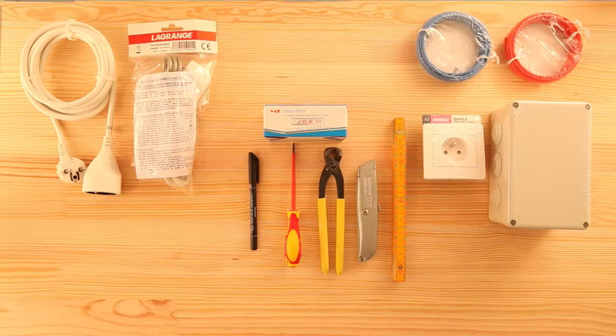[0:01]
Okay, today I'm building a tempering bath system to accommodate various container sizes. I will mainly follow instructions mentioned by Nicholas on his blog post about a thermostated water bath. The link to his post appears at the bottom of the screen. You can copy it for reference. So thank you, Nicholas. Today I'm just going to show how to set it up.
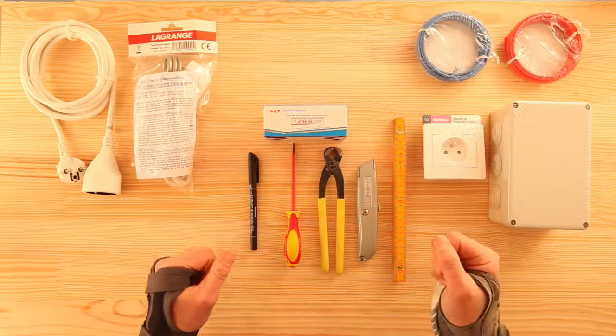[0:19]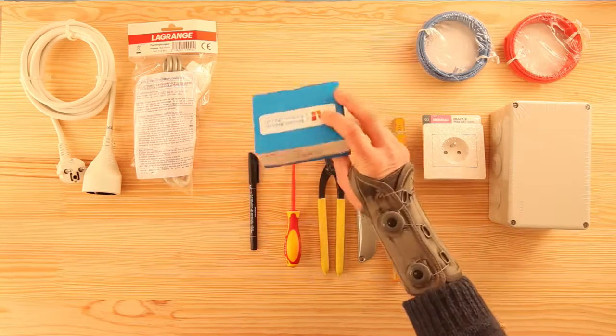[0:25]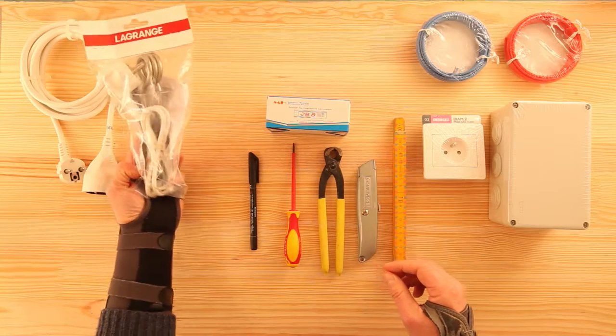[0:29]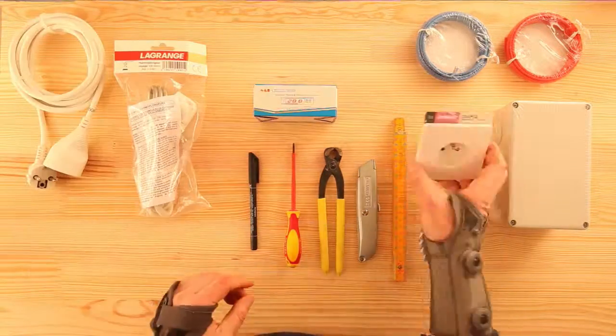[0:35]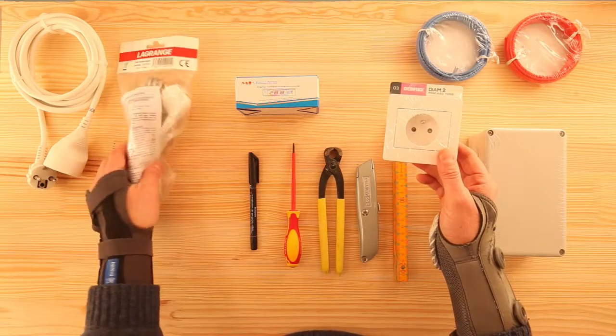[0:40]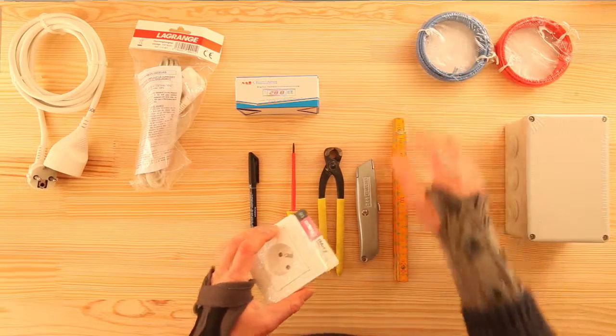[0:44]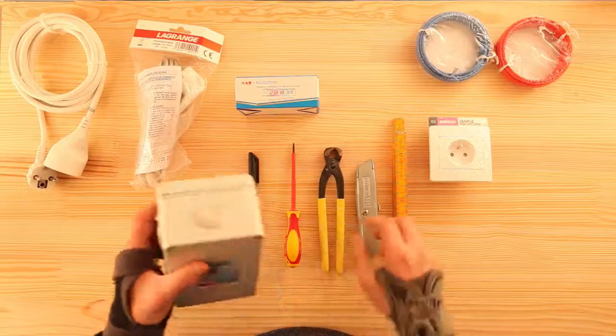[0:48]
We'll need a temperature controller. It's easy to find one. Several online dealers are referencing a few of those. We'll also need a 300-watt beverage heater or immersion heater. It's just a big heating resistance, like the ones found in electric kettles most of the time. Then we need a wall power socket to plug the immersion heater in, and obviously some copper core electric cable. Finally, a box to install everything in.
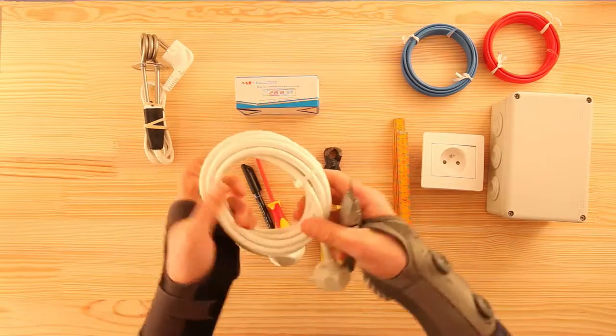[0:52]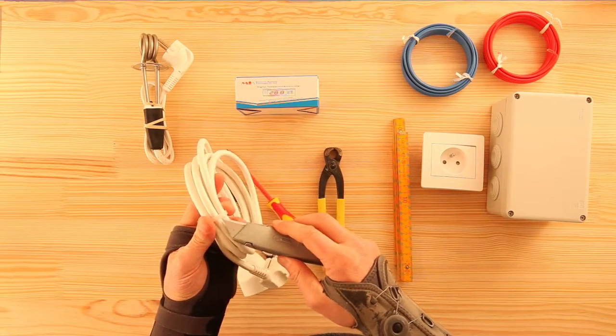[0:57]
Here, I will sacrifice a heavy-duty extension cord to make the power supply for this whole thing. As stupid as it may sound, it is cheaper than making one from scratch. At least in my area.
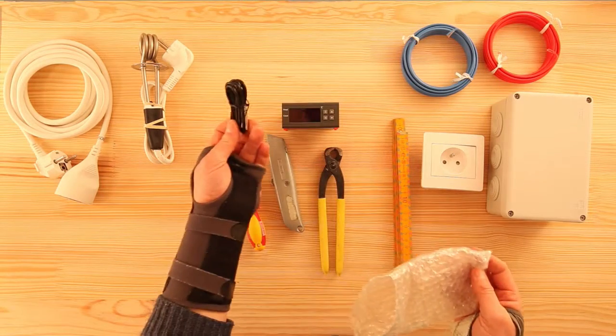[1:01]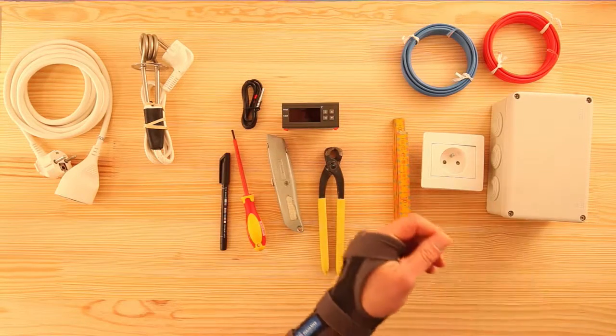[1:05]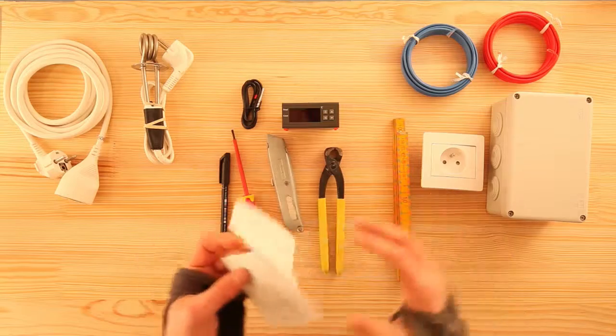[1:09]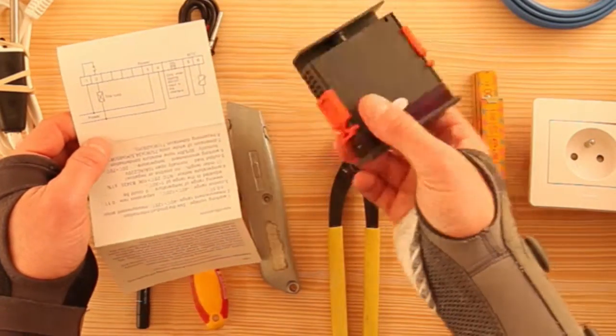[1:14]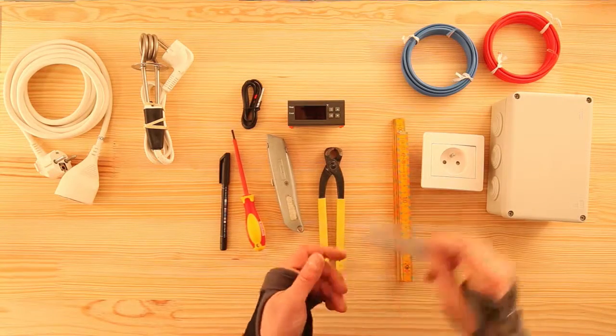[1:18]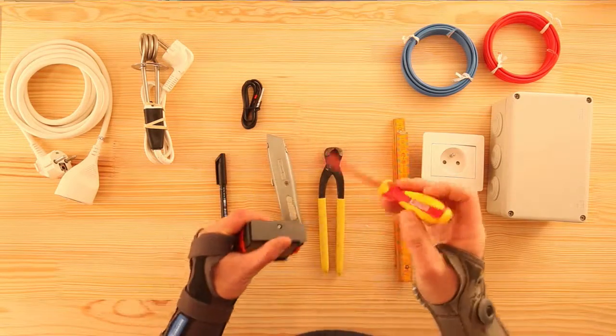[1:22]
The operation principle is as follows. The digital temperature controller measures the temperature via its thermocouple sensor and compares it to the reference temperature entered by the user on the controller panel. When in heater mode, if the measured temperature is below the reference temperature, the controller closes a switch and allows the current to go through the heater, so the heater warms the bath. When the temperature is greater than the reference one, the controller opens the switch, which cuts the current, and then the heater stops warming the bath.
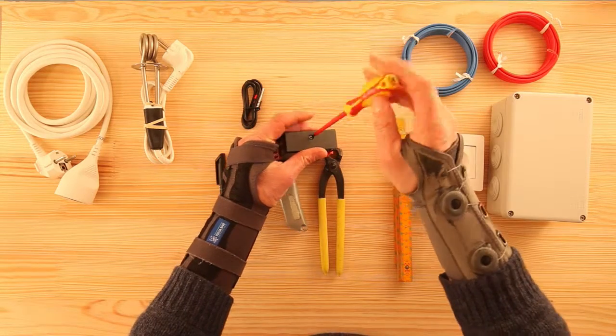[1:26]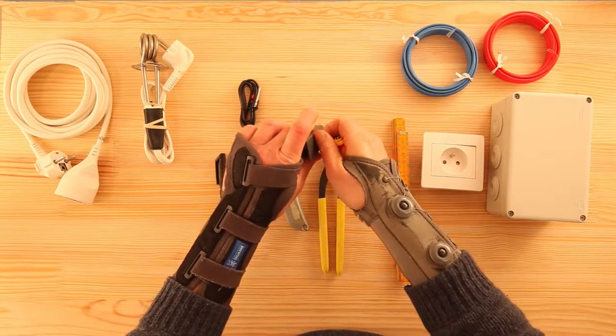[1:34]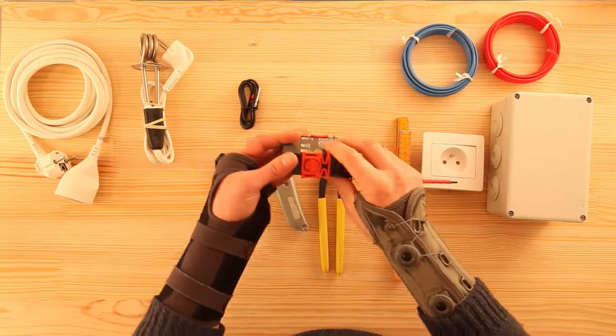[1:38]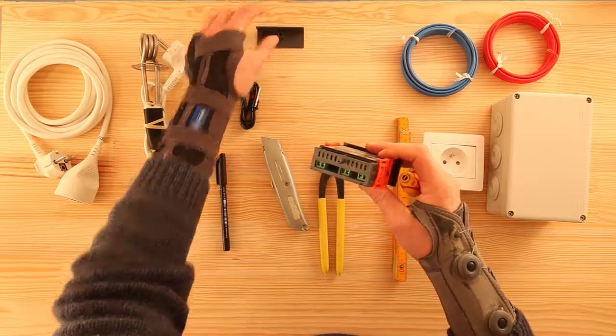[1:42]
Okay, I don't live in a country where you can sue someone for having burnt yourself with hot water. But given the state of the global economy, it might get to us not too long from now. So for all intents and purposes, you are on your own. If you mess it up and electrocute yourself, or else, it's your fault, not mine. Sorry, I know. I'm a bastard.
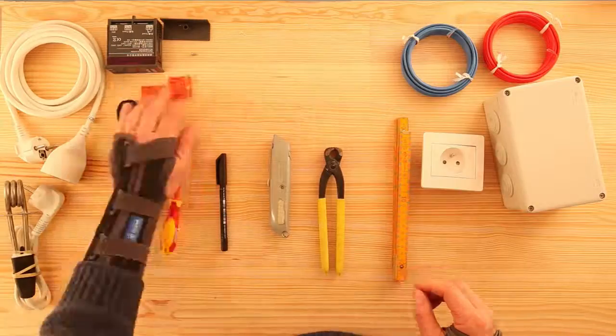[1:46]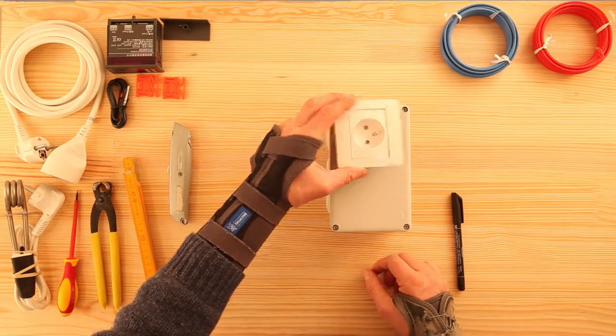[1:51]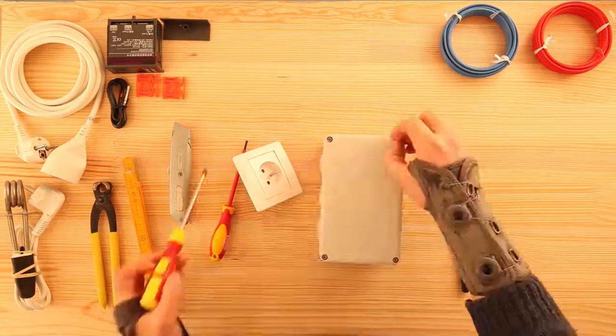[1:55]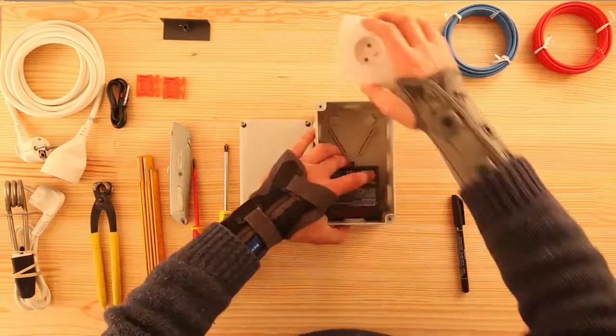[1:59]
Personally, I'm not fond of electricity in wet environments, for obvious reasons. So for the box, I chose a semi-waterproof electrical junction box. What takes quite some time is the fitting of all elements into the box. The wiring, you'll see, is quite quick in comparison.
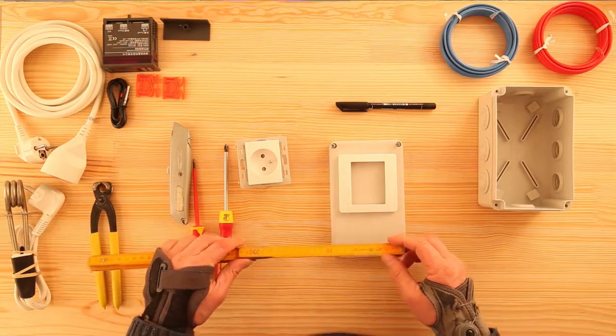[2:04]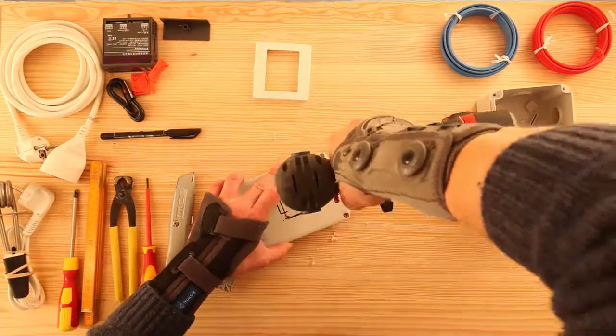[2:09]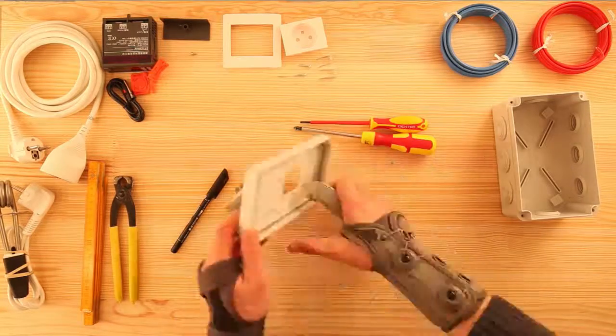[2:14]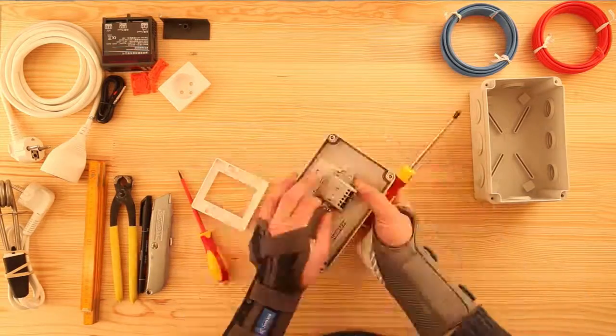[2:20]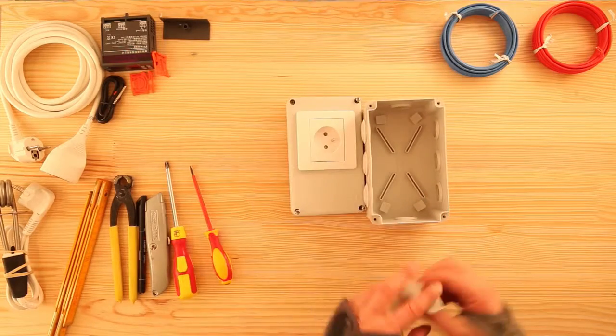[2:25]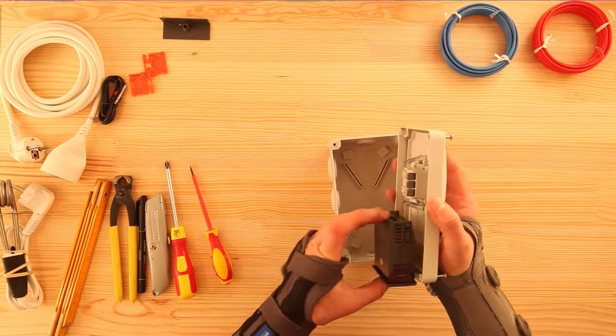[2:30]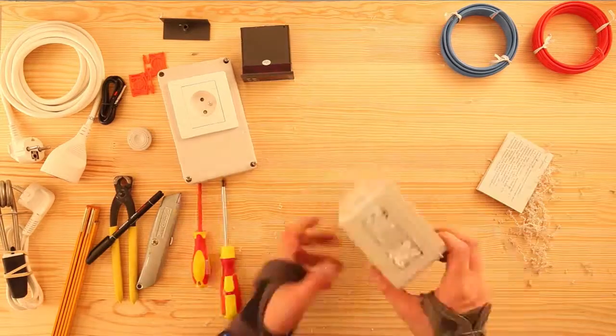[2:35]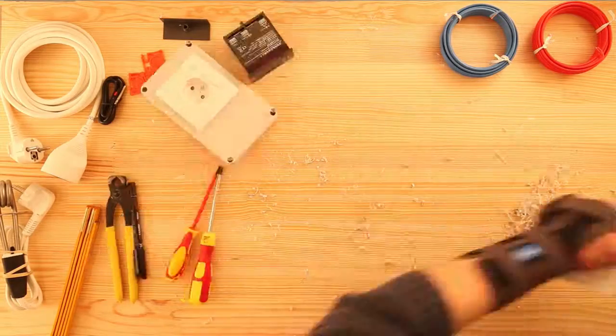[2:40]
First, I will install the power socket on top of the box, where I will plug in the heater. So I take measures, I draw a few lines, and I drill holes all along the perimeter. So here we are, all this mumbling for that. Same thing for the controller that I place on the other side of the junction box to avoid having wires on top of each other. To make the whole thing relatively waterproof, well, water projection proof really, I will certainly add some silicone sealant around the controller and power socket when this video is over.
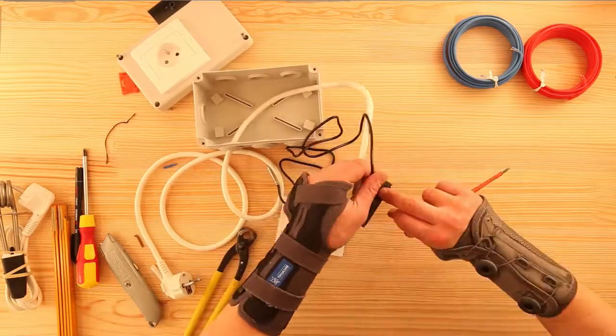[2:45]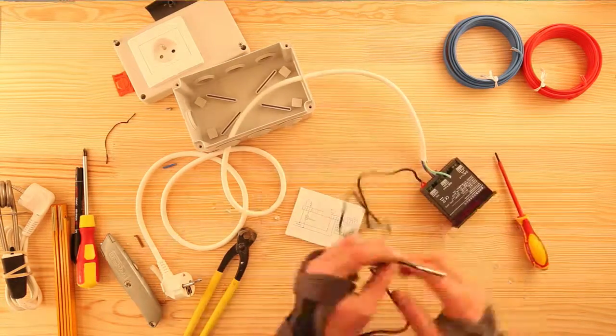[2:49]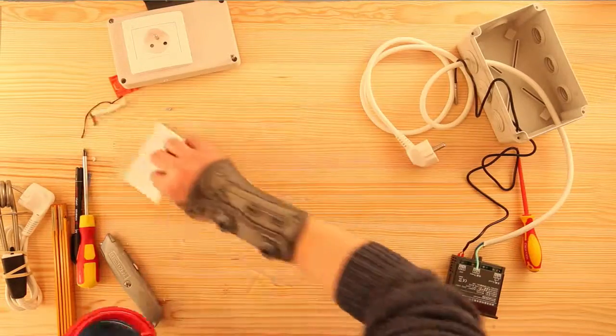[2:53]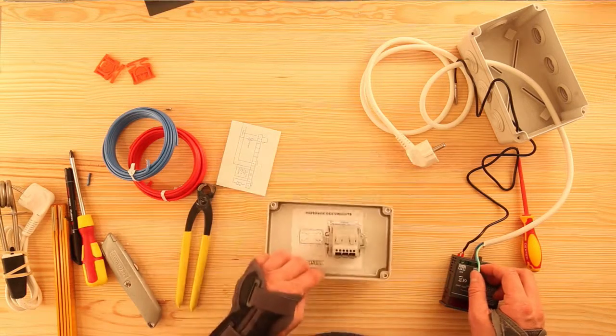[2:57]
Regarding the wiring, it's quite simple. I just follow the wiring diagram that comes with the controller. The NTC label refers to the thermocouple sensor. Regarding the wires through which the current of the heater will pass, one needs to choose wires with a fair cross-section in order to avoid overheating inside the junction box due to undersized wires for the load.
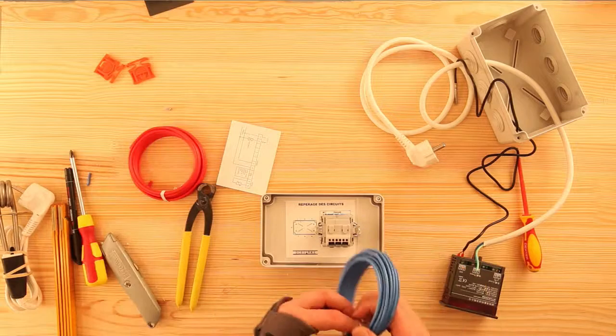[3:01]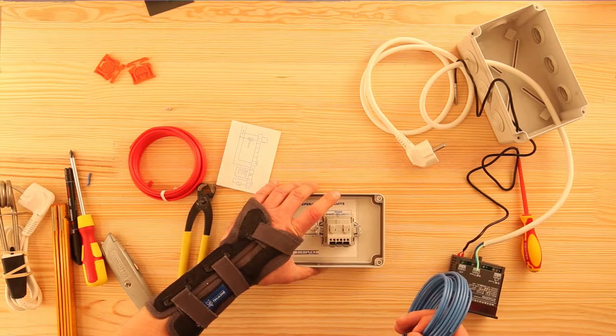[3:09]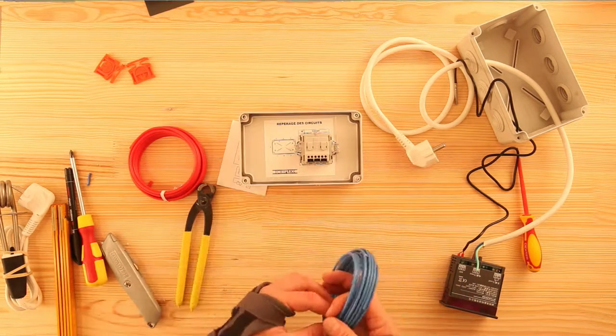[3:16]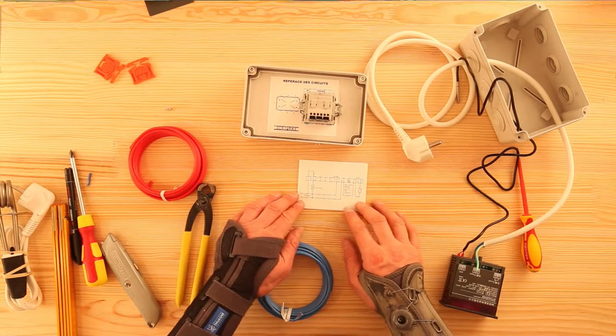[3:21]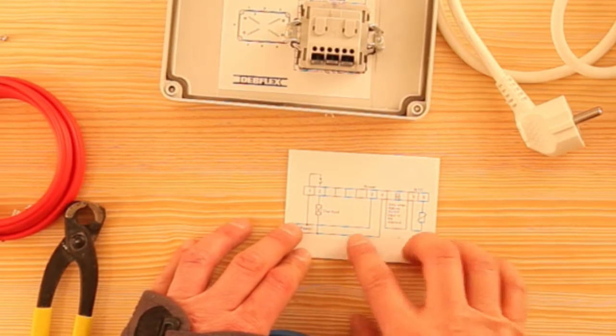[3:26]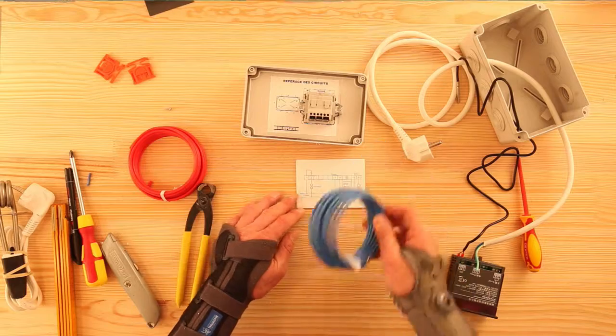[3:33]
For reference, P equals U times I. With P, the power, we have here 300 watts, so with a voltage of 220 volts, we have a bit more than 1 ampere. 1 ampere is quite a lot already, so I follow the rule of thumb, which considers quite reasonable 1 ampere per square millimeter of copper cable cross-section. In order to keep some room for potential future use of heaters with a different load, I'm using 2.5 square millimeter cross-section cables. So these are fairly rigid cables. I use a blue cable for neutral and a brown or red cable for live or phase.
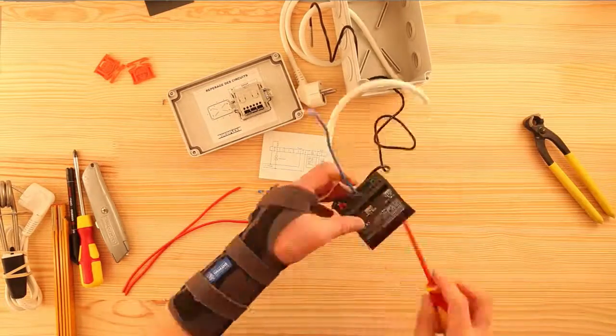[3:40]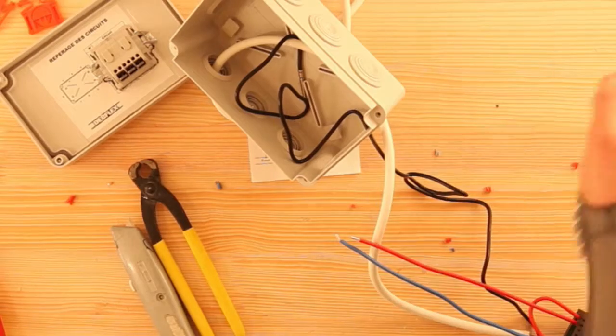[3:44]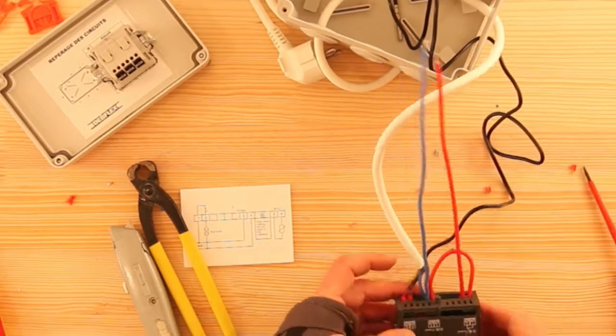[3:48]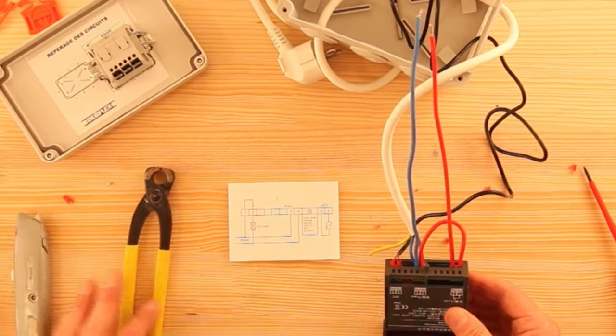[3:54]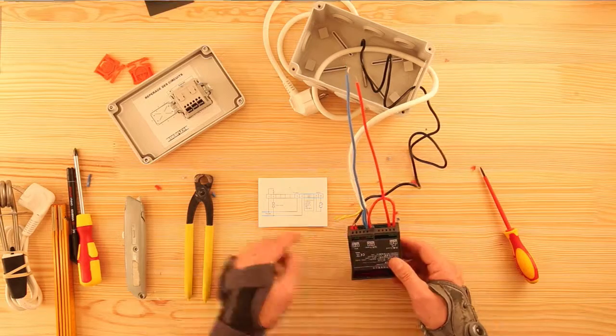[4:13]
On the diagram, I connect my neutral on input terminal 4, so these are 1, the blue wire from the mains power supply, and 2, the blue wire which goes to the heater power socket. And on input terminal 3, I connect my phase or live, so these are 1, the brown wire from the mains power supply, and 2, the red wire which goes to the controlled switch on input terminal 1, and which goes out on output terminal 2 from the controlled switch towards the heater power socket.
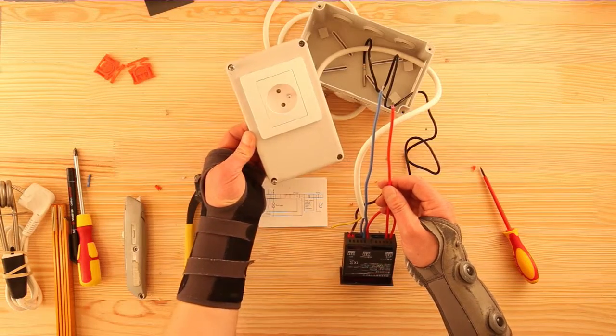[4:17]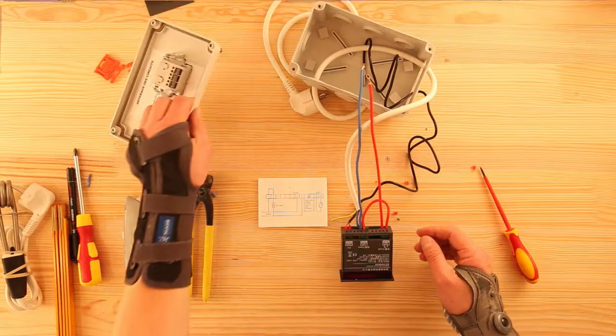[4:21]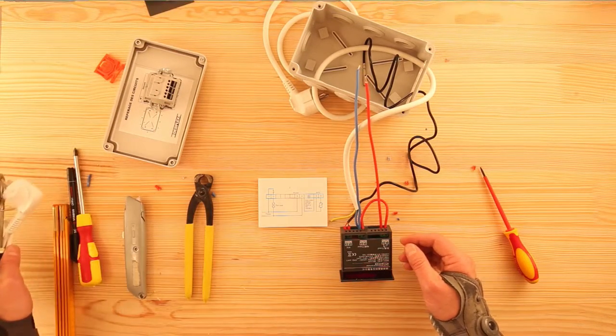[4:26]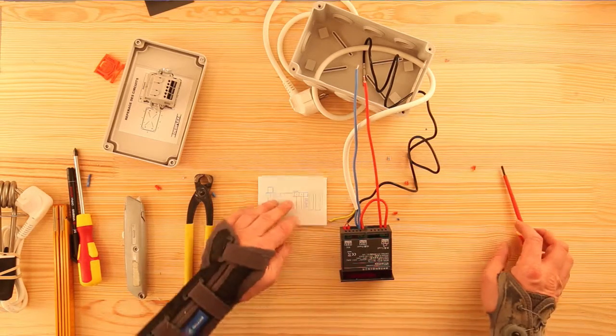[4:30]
So the heater power socket will be supplied with electricity here through my blue wire, the neutral, and my red wire, the phase or live. Therefore, the heater will be plugged in here and will be de facto supplied with electricity or not when the controlled switch is closed or opened.
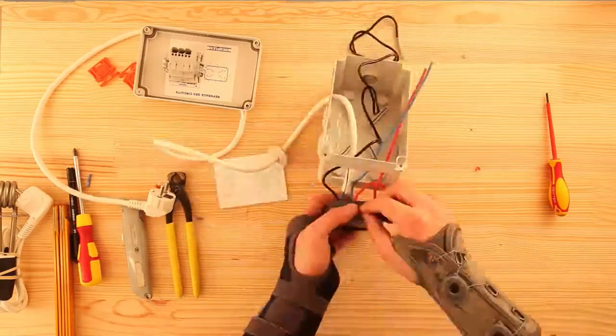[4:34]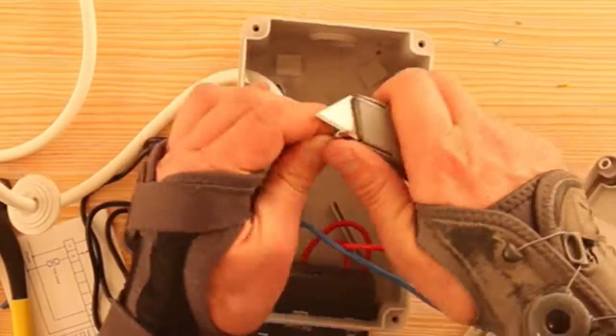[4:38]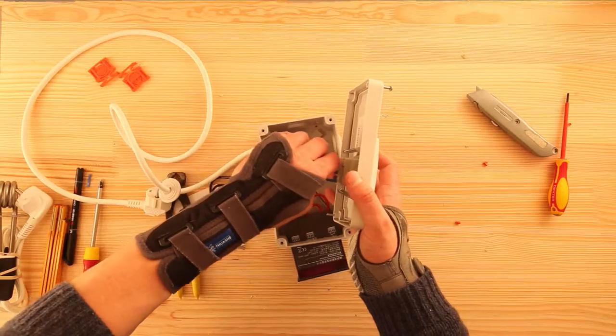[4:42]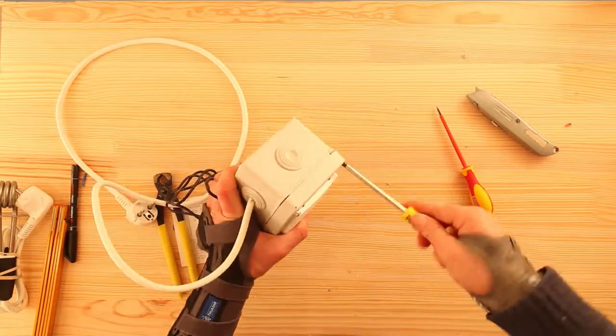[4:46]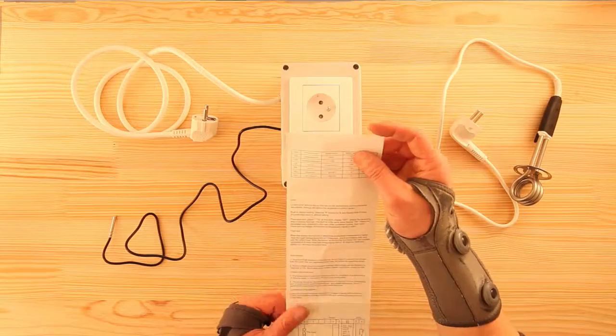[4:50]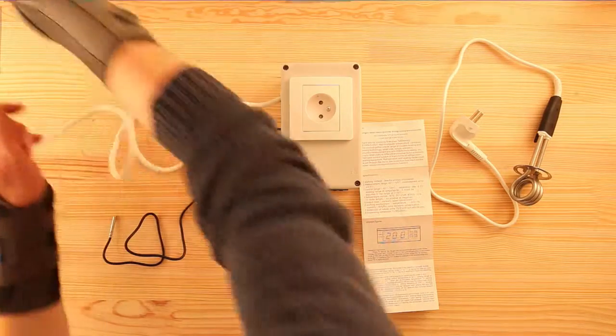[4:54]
Then what is left to do is putting everything in the junction box and connecting the heater power socket, in which I also connect the earth from the mains power supply. I close everything. Now we just need to check that everything works according to plan. Just about time for me to read the instruction manual.
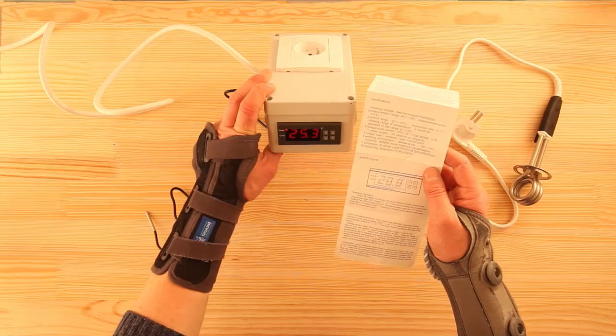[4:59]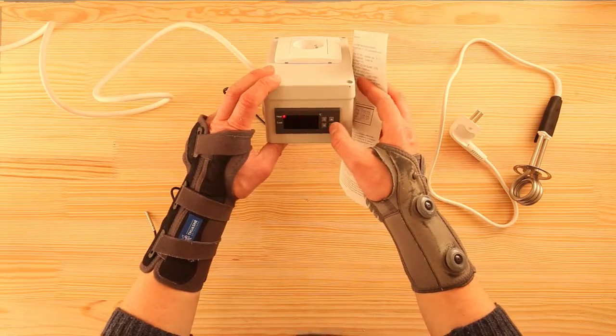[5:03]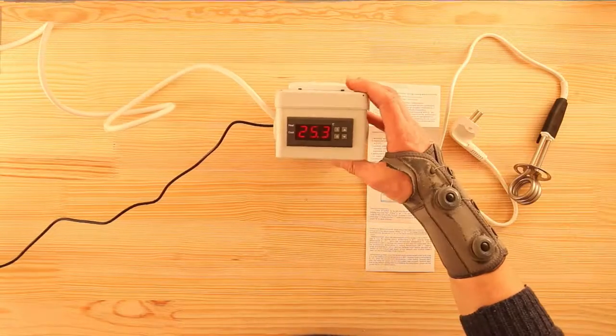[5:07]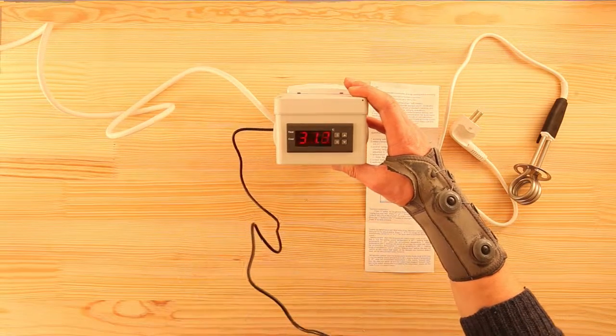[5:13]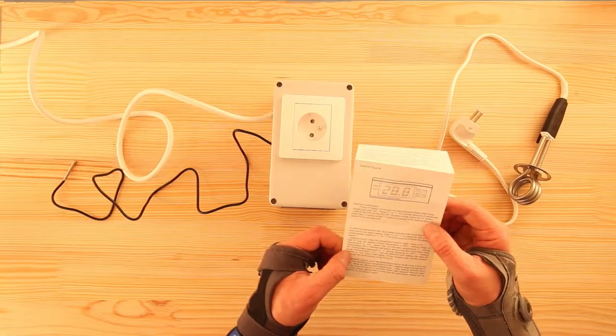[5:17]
It switches on, it's already a good start. The display shows the temperature measured by the thermocouple sensor. 25 degrees. It's quite hot in here due to halogen lamps needed to light the table for the video. I check first that the thermocouple sensor works properly, so I bring it near the halogen lamp and we can see it goes up quickly. Blowing on it helps it going down, more slowly of course. All is A-okay on this side, let's carry on.
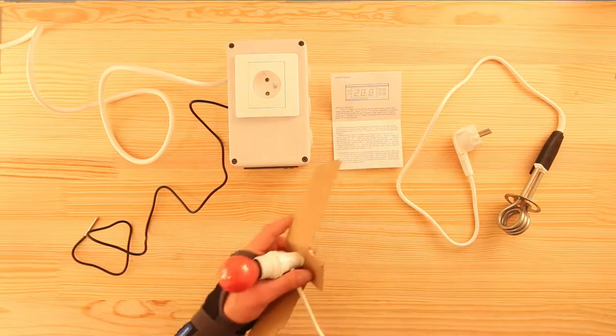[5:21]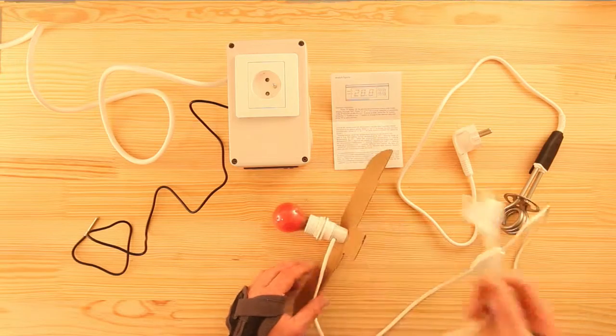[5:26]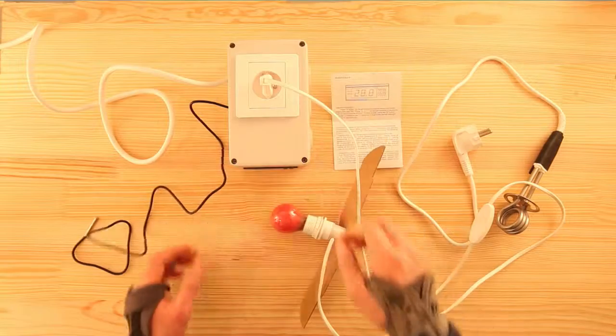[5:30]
I now want to check the control switch. I will check it with a light bulb as it's obviously easier to see. It's the light bulb I use as an inactinic light for the collodion development procedure. It's only a decorative bulb, nothing fancy. It's a wonder of technology, really.
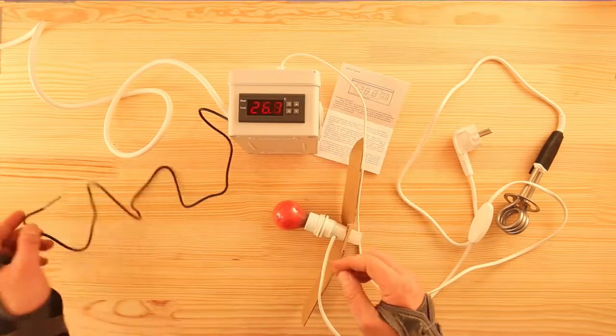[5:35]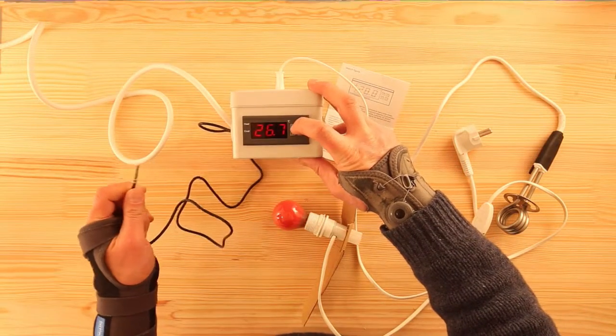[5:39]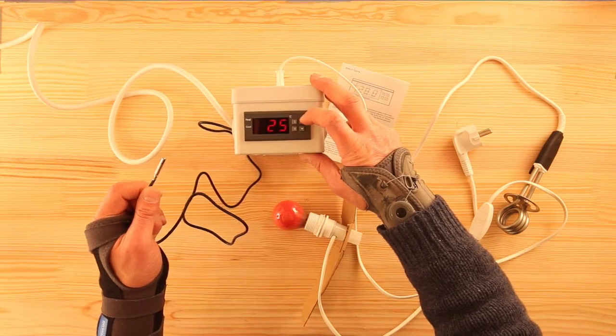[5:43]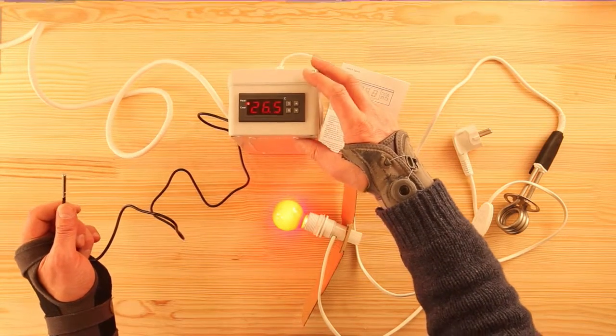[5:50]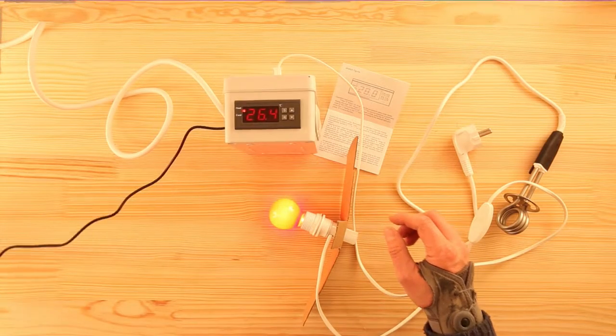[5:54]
So here is the sensor indicating 26.7 degrees Celsius. 25 is my reference for the controlled switch in heater mode. It's below 26.7, so the switch is opened, normal. And if I raise the reference to 30 degrees, the switch now closes itself and the bulb is lit. Pure magic, it works. As expected, we need it to heat to reach 30.
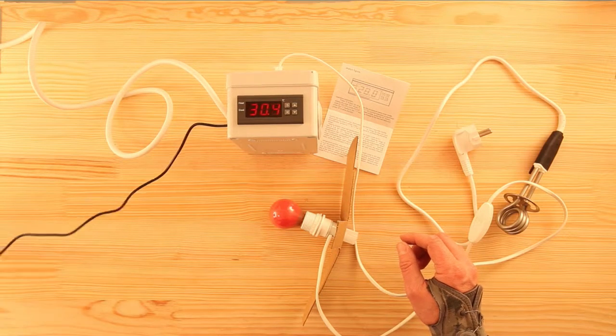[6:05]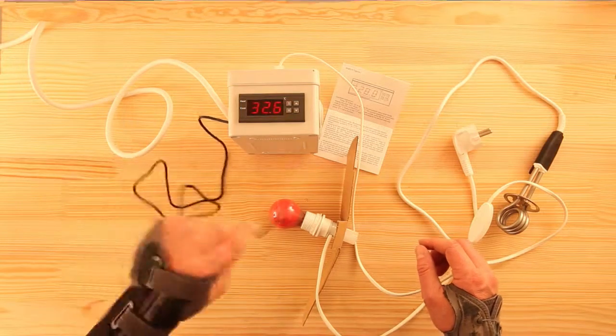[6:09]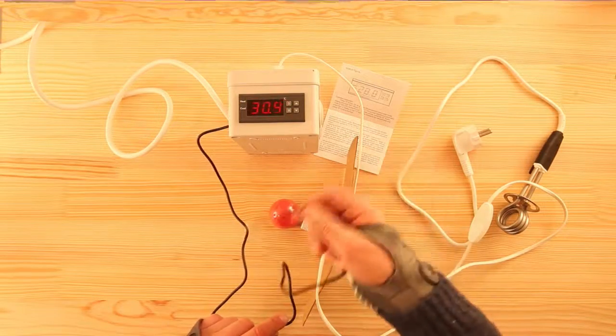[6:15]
To check whether the thermocouple breaks the circuit as soon as we reach 30 degrees, I place it once again near the halogen lamp. It goes up fast and clack, at 30, the circuit breaks. It takes a bit longer to cool down, as expected. And when we go below 30, it switches on again. It's not immediate because there's a latency.
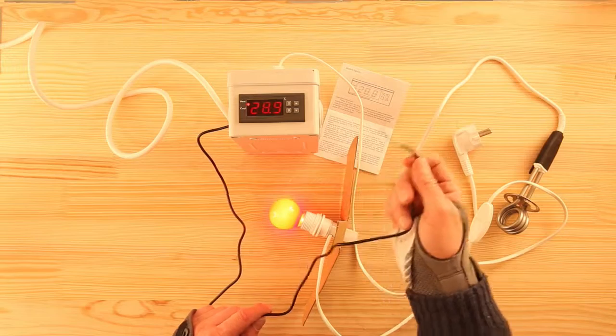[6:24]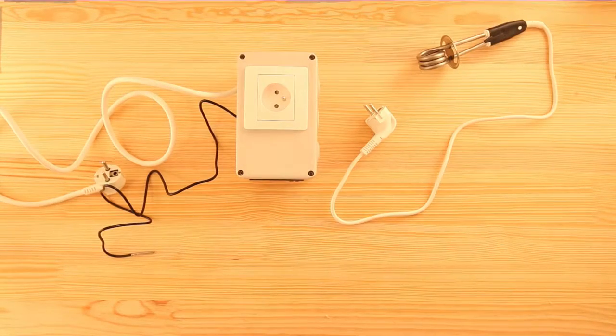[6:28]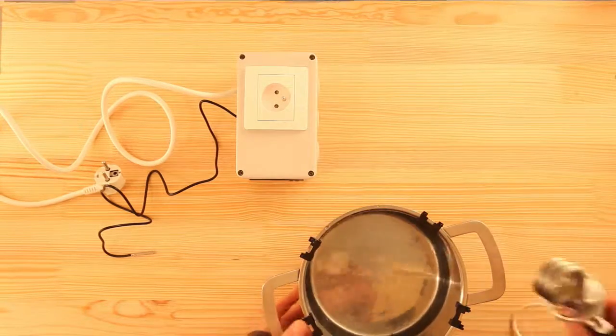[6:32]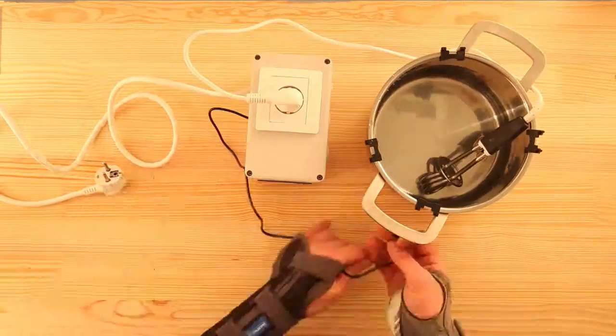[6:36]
The controller doesn't measure every second. The precision can be adjusted, but it can vary depending on the controller type or brand. But for my intended use, it's quite enough. I will show in another video what is the intended use for this tempering bath system, at least for my use. Let's do a live test now, a self-tempered bath.
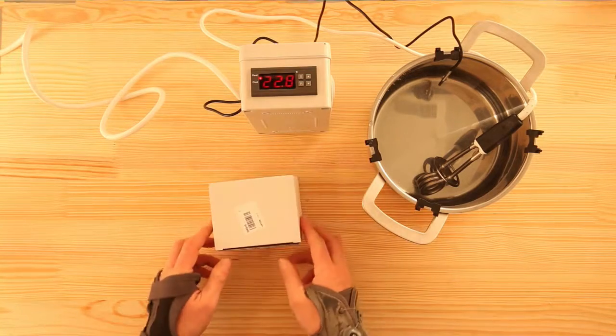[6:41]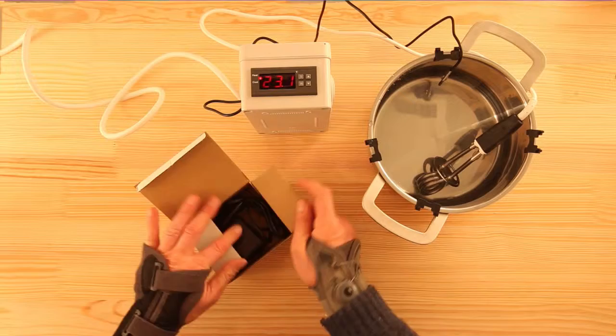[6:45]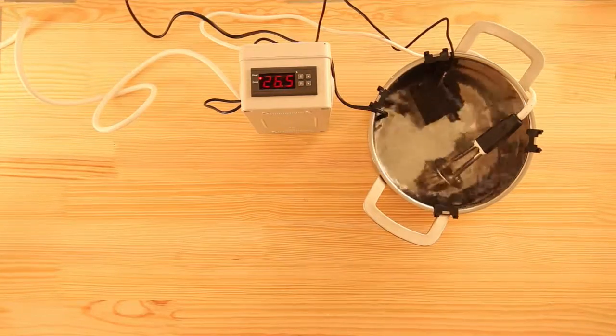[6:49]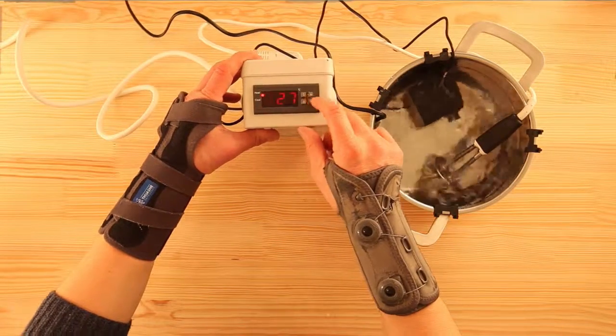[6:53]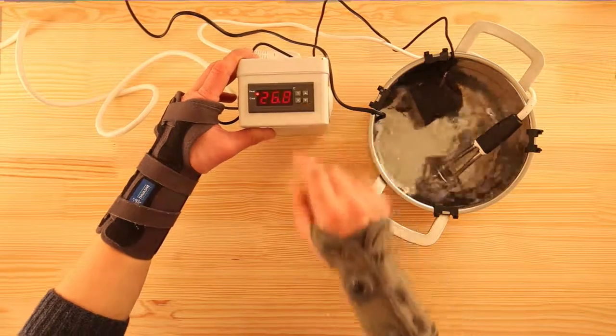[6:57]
It's obvious that the water close to the heater is hotter than the one farther from it. So to properly mix it, we only need a small submersible water pump like the ones found in aquariums. I want to warm my bath at 30 degrees, so I enter 30 for the reference temperature.
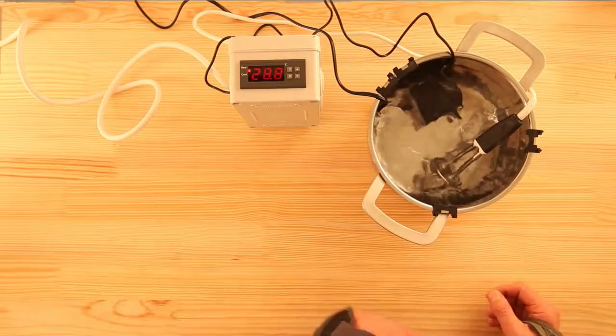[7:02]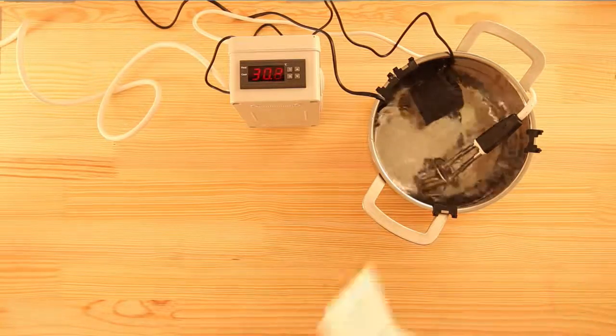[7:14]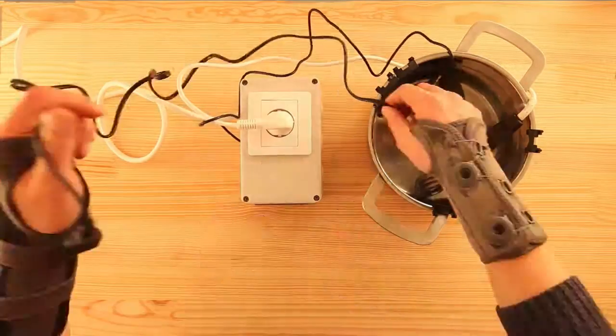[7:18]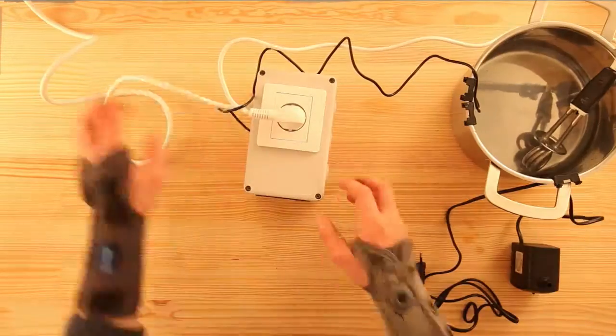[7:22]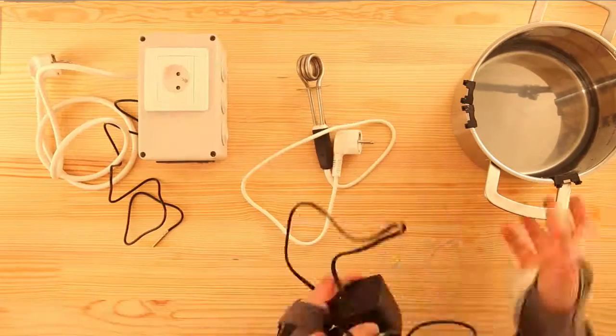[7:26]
We can clearly observe that from 30 up, the small red indicator light is switched off, telling us the heater is switched off too, but the temperature keeps on rising. It's normal again because the heater is still quite hot and it's enough to warm the bath just a little bit more. It's then very clear that for a much better precision, it is important to calibrate factors like the controller latency and the power of the heater as a function of the bath volume. In short, calibration will help in achieving greater accuracy.
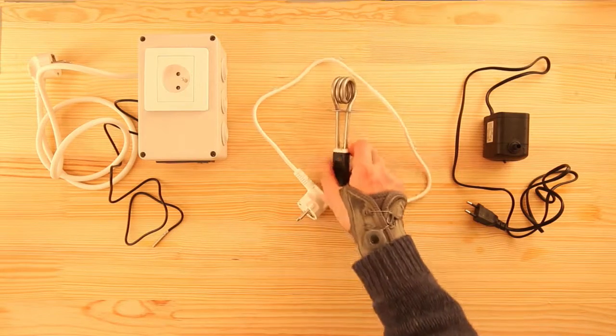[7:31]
So there you go, all what you need to have to build a self-sustained tempering bath. You need a temperature controller and its thermocouple sensor, a travel beverage heater or warmer, called also an immersion heater, and a small submersible pump.